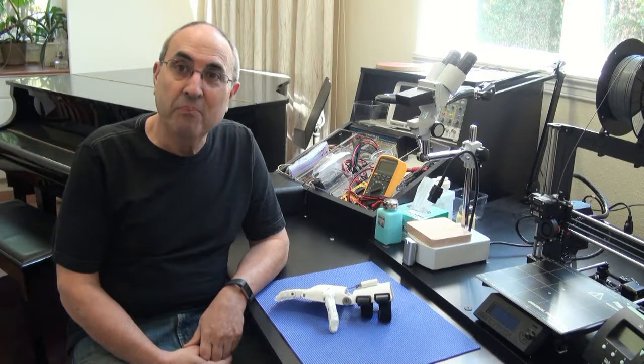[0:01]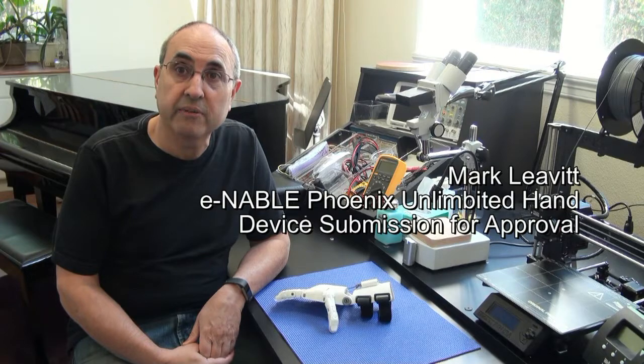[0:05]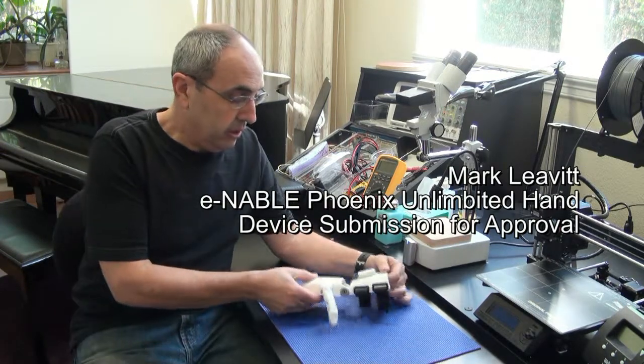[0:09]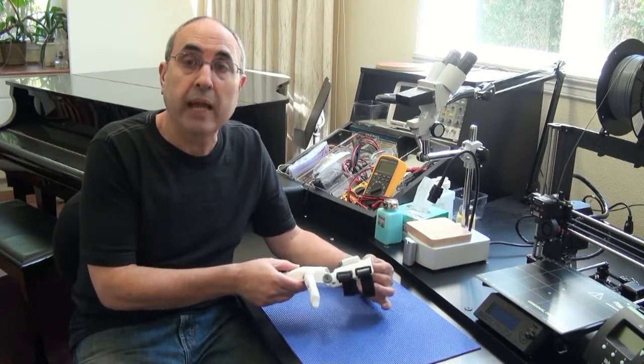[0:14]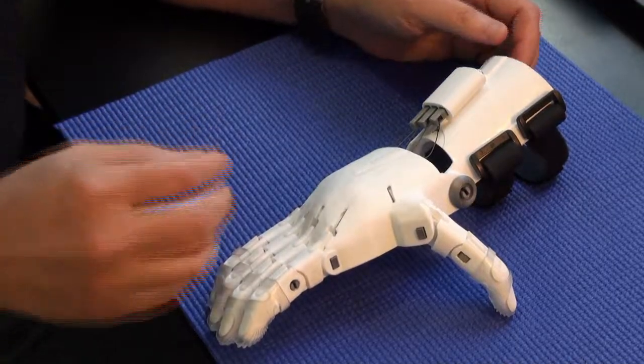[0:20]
Hello, my name is Mark Leavitt. I'm retired from careers in electronic engineering and as a physician. And I'm submitting this video to show my fabrication and assembly of an e-NABLE hand to become qualified to become a fabricator and assembler. All right, let's take a look at the device itself.
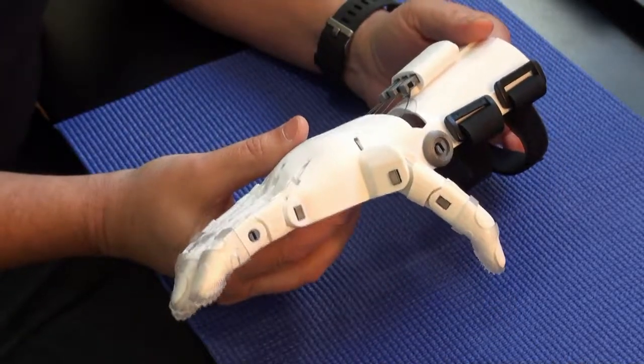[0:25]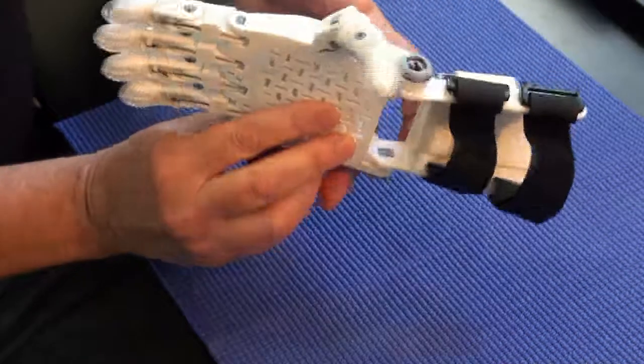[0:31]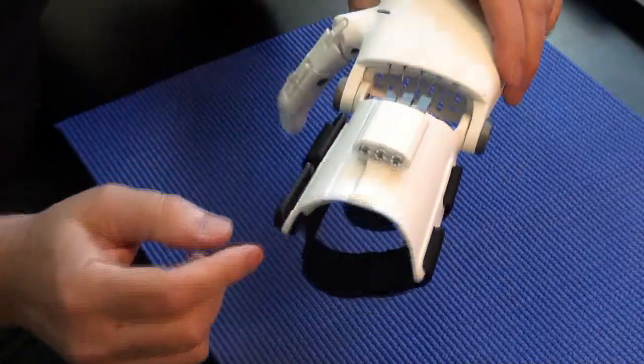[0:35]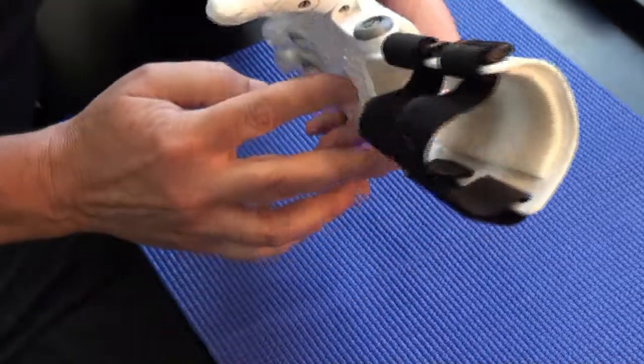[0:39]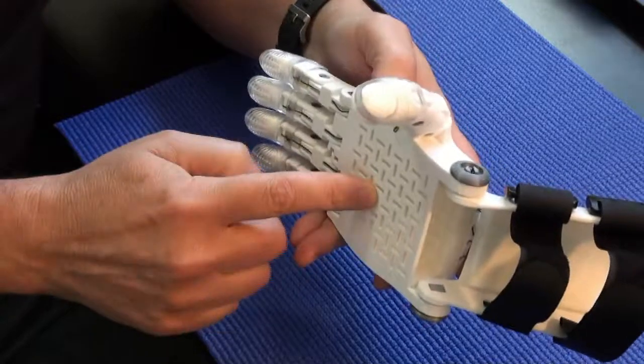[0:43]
So I've made a Phoenix Unlimbited hand, right side at 120% scale. And this uses the three screw tensioner, and it uses the thermoformed gauntlet. And this Phoenix Unlimbited has the integral thermoformable palm, not the separate palm that's screwed on.
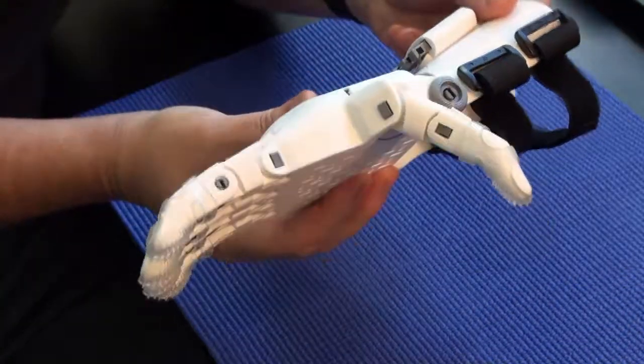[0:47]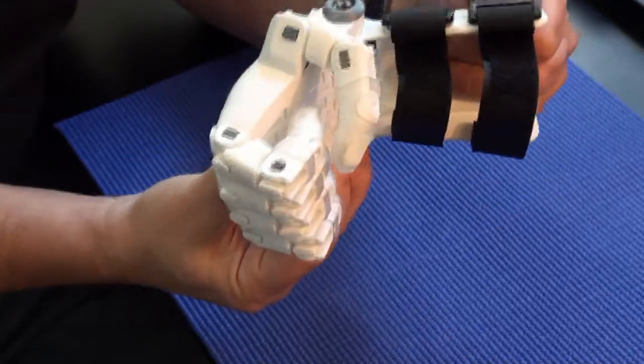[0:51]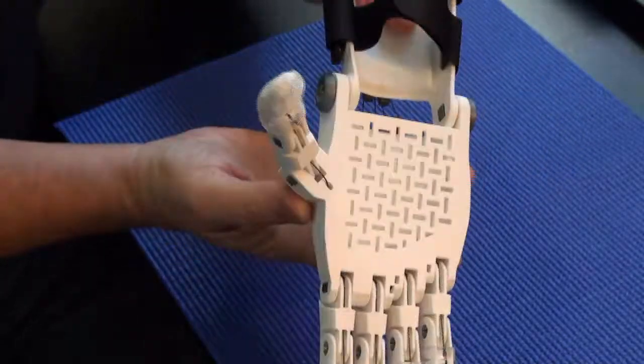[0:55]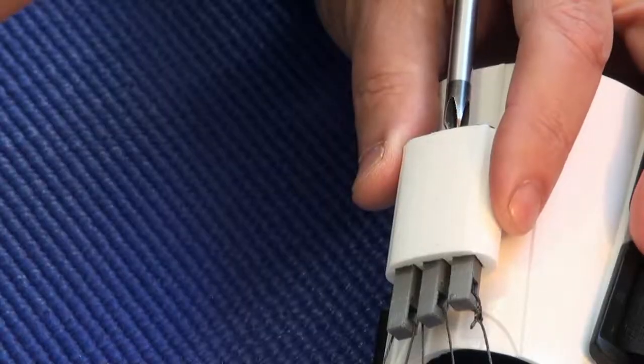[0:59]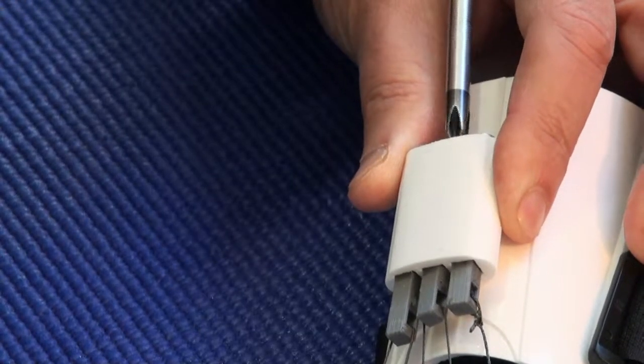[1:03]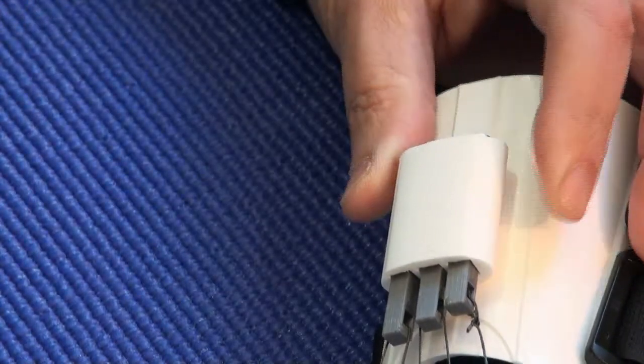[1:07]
So to look at the function of the hand, you can see that when I bring the wrist in, the fingers close and the thumb closes on top of them. Give you a couple of views here. I'll show the tensioner operating here. As you can see, turning this screw tightens this tensioner bar or loosens it as I loosen it. And that adjusts the function on the second and third finger, the tightness.
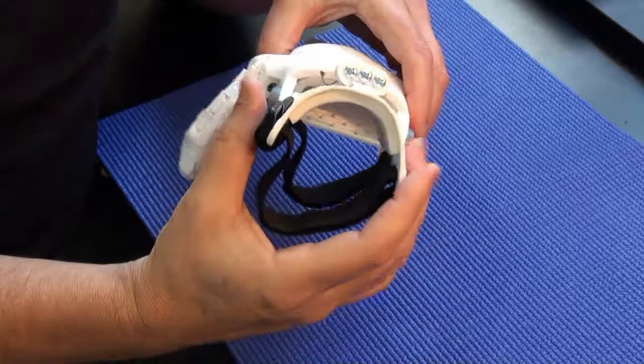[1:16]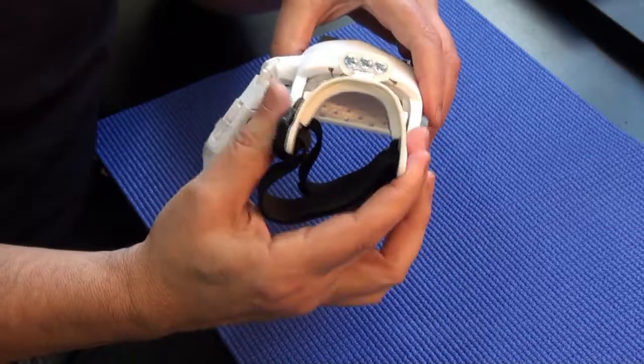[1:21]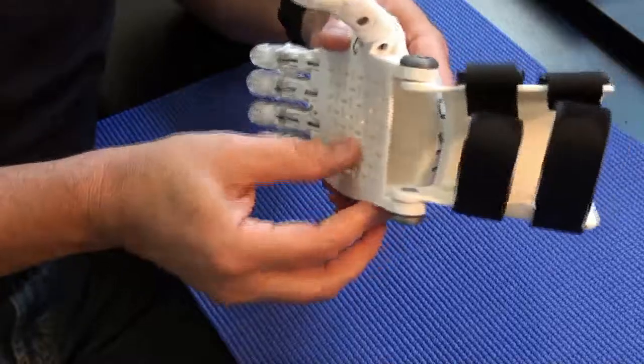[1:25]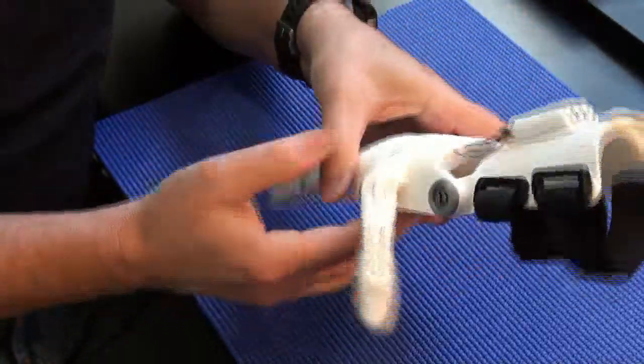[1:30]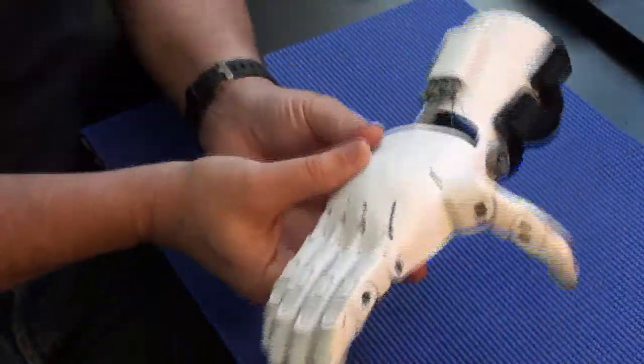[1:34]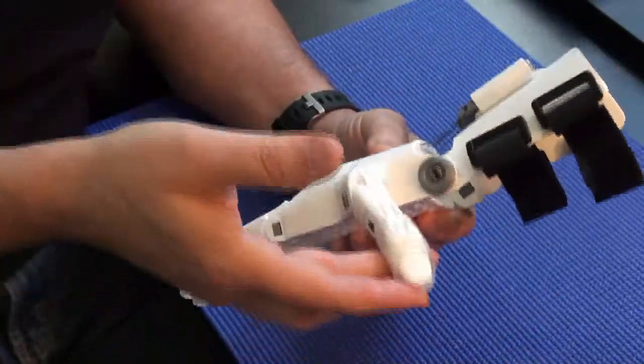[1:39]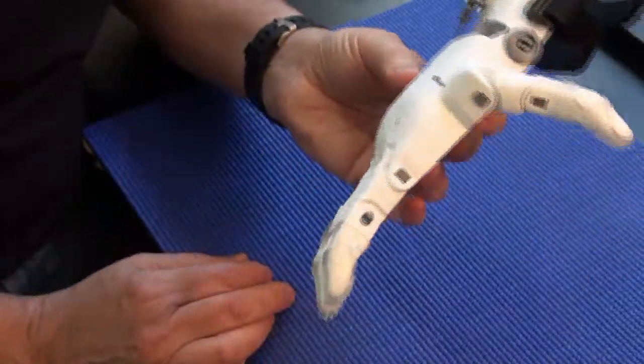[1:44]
Let's look at the durability. You can see that the thermoform gauntlet is very strong as a result of being bent after printing rather than having all those Z layers. The palm is very strong because it has the integral palm, so there's no flexing there. And I can shake this violently. No pins come out. I can put quite a bit of stress upward on the fingers. I can overstress them downward. Everything holds together. So I'm really pleased by the durability.
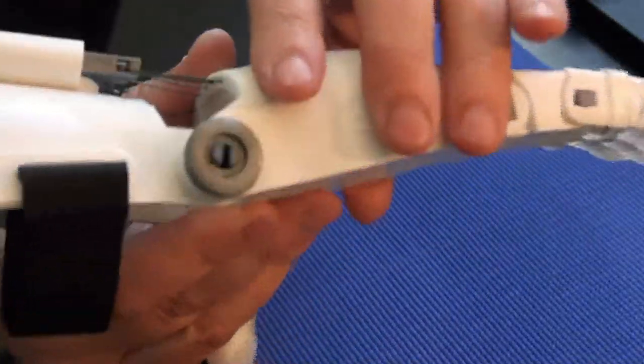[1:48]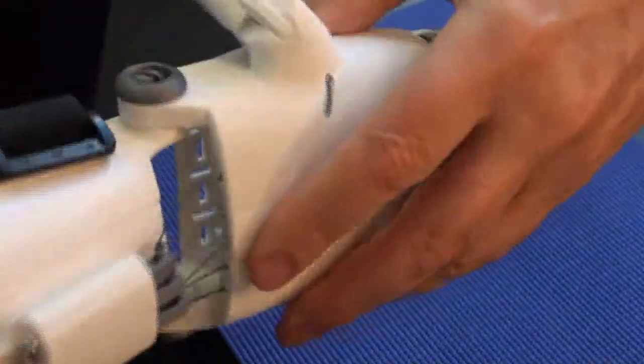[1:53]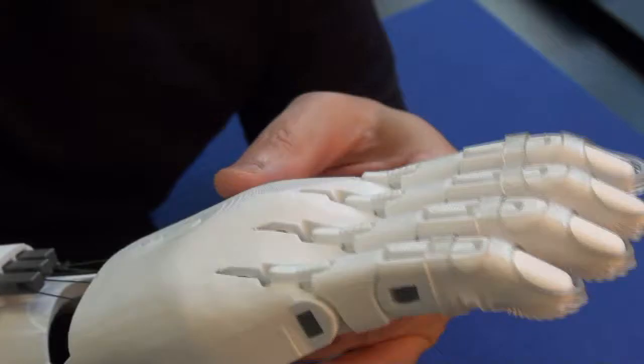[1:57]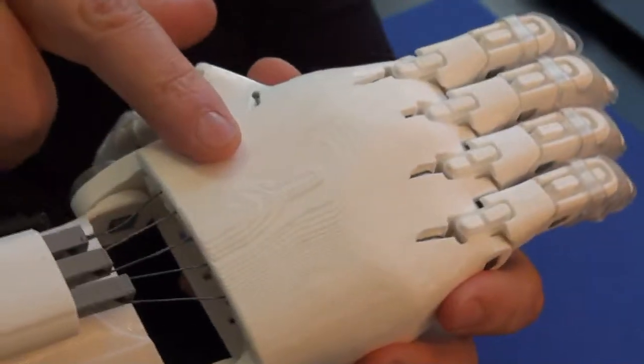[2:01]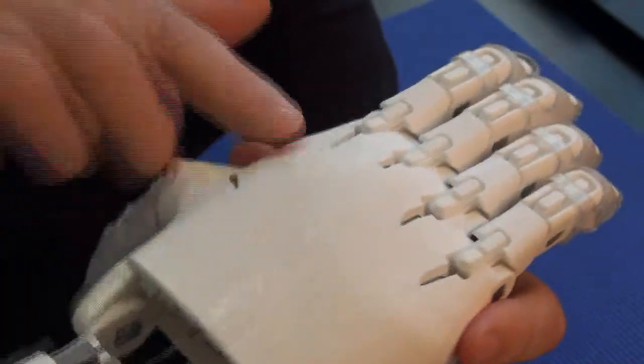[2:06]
You can see the pins in place here. There's no tendency of these to shake out both sides. Let's take a look at the print quality here. The only place you really see stepping is at the top of the palm. You can see that the 200 micron layers give some stepping, but it's not rough to the touch.
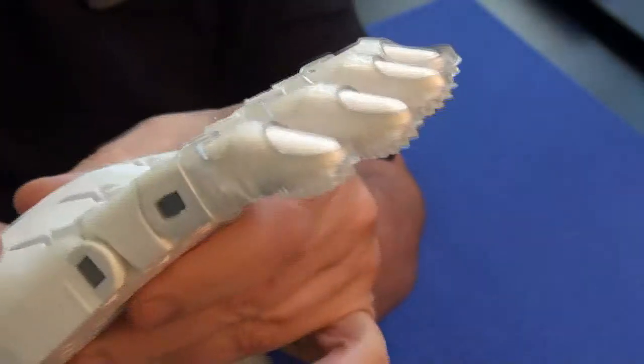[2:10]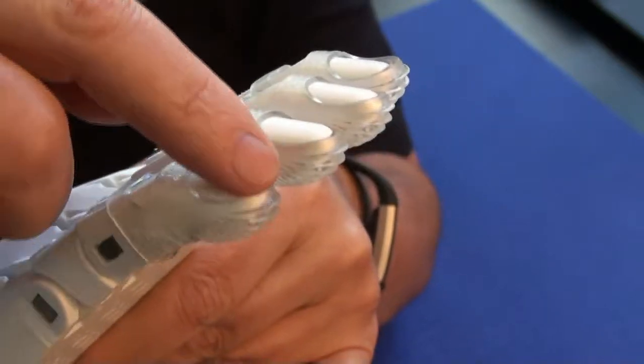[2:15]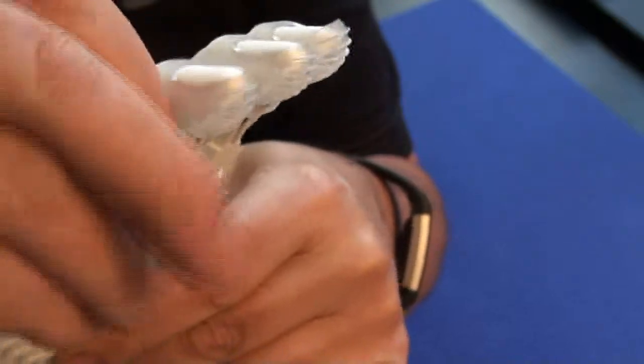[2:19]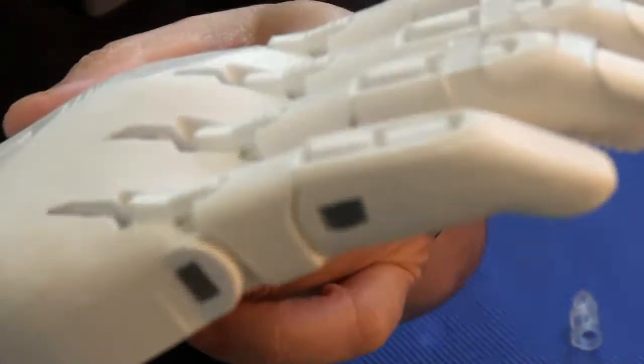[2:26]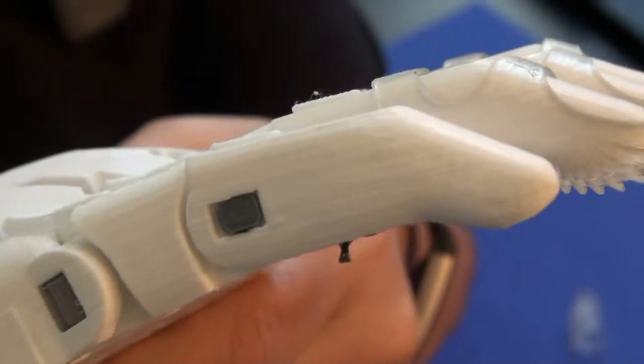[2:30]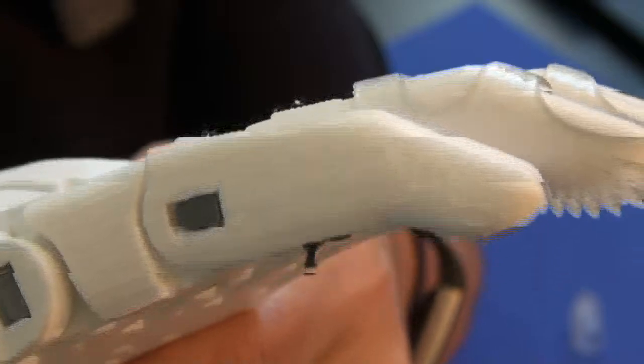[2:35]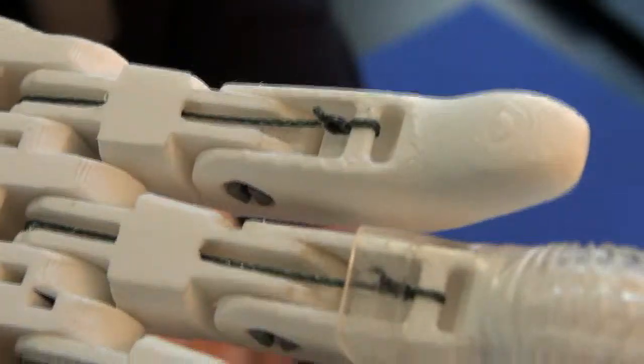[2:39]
The fingertips came out quite good after I learned how to slow down the printing so you didn't get drooping or curling. And I think what I'll do here is pull off the silicone tip on the pinky finger and give you a close-up of that as best I can. There you go. So you can see I got good results after a couple of tries and a learning experience. And then the bottom side of the finger, again, you're going to see some stepping there, but beyond that, not really a lot of roughness.
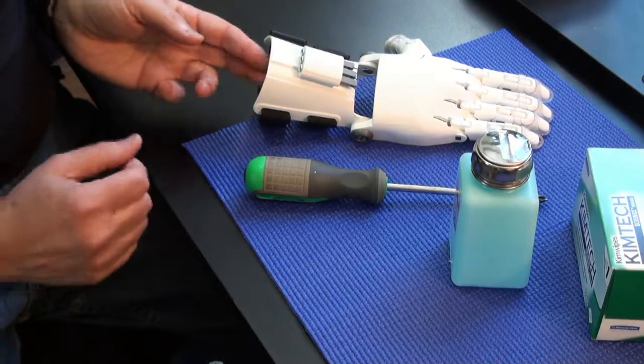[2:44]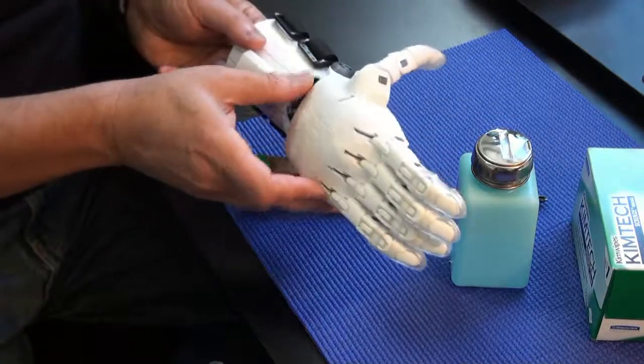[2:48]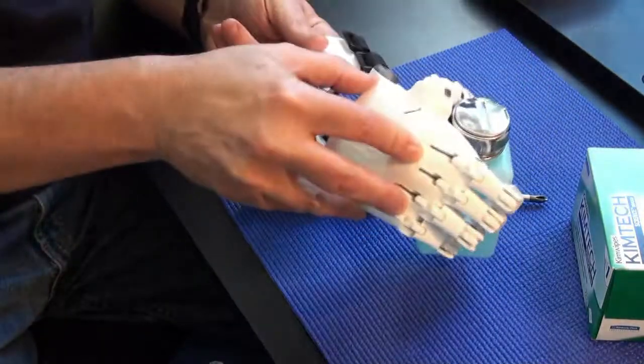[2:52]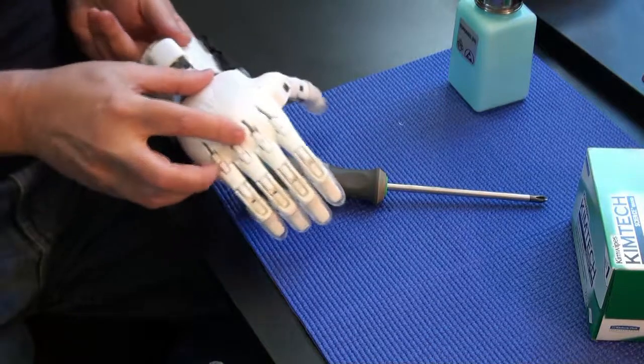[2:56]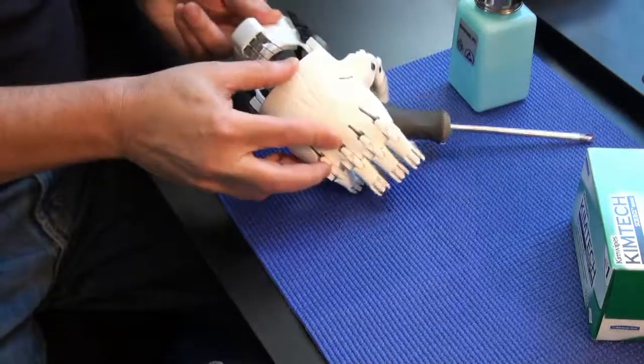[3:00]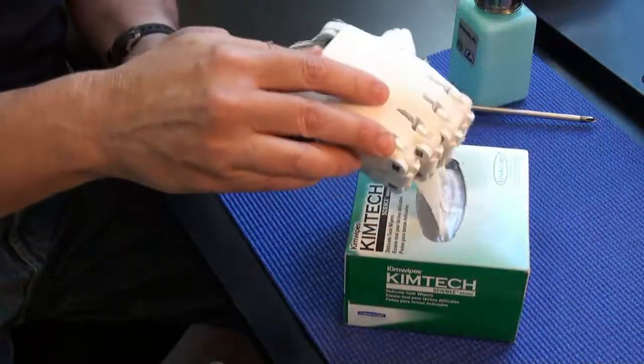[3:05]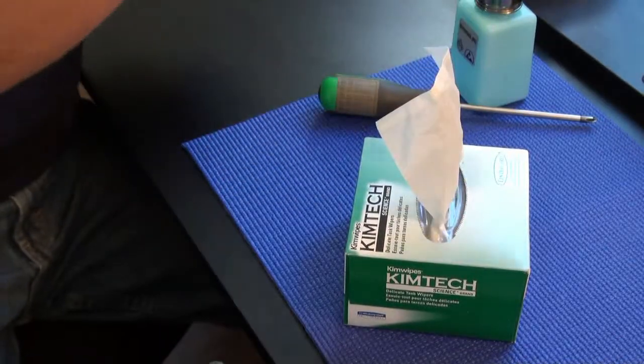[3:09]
I think more important than how the hand looks is how it functions. So let's try some demonstrations. Let's pick up this bottle of isopropanol. I can do that without spilling it. Let's see if we can pick up a screwdriver. I'm not sure how well we could screw something with it, but we can pick it up and manipulate it. Talking about getting something delicate, let's get a Kleenex. Actually, a Kimwipe. There you go.
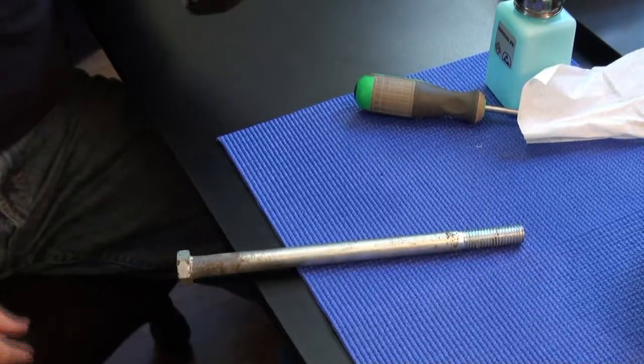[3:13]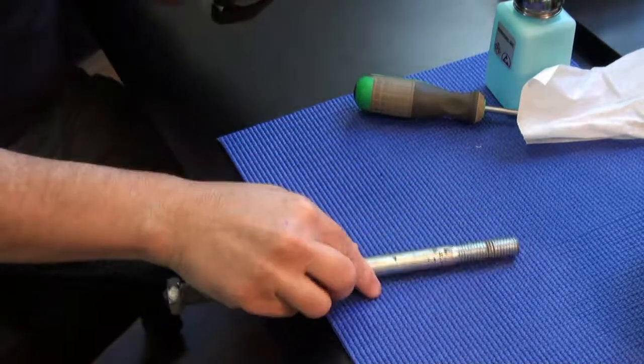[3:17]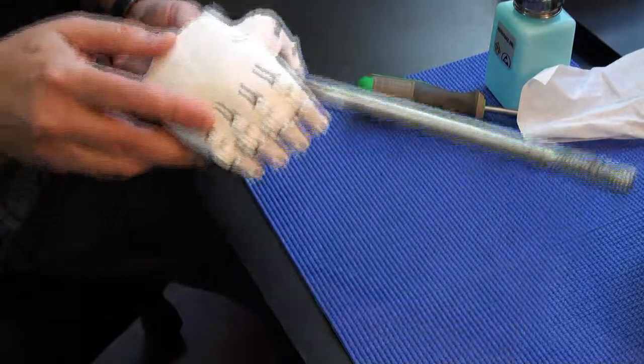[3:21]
And for kind of a brute force test, I've got this bolt. It's heavy. And we're going to grab it off the table here and see if we can pick that up. There it is. Pick up this heavy bolt.
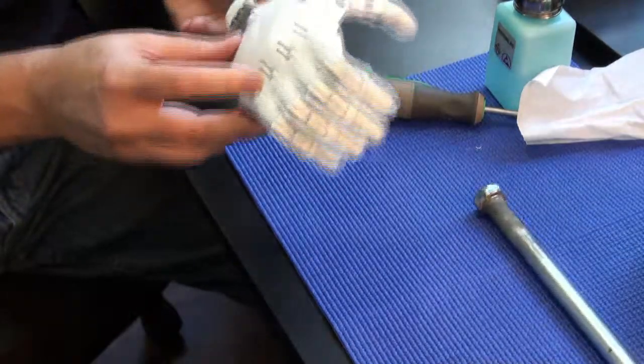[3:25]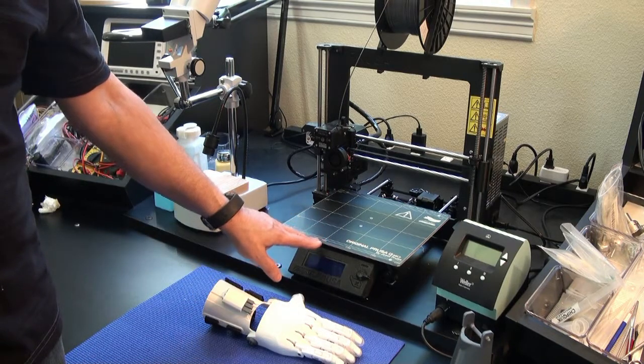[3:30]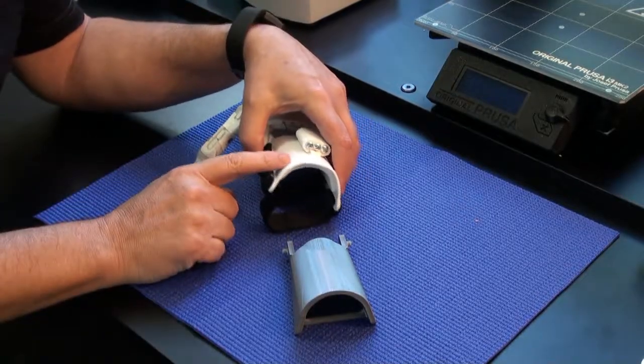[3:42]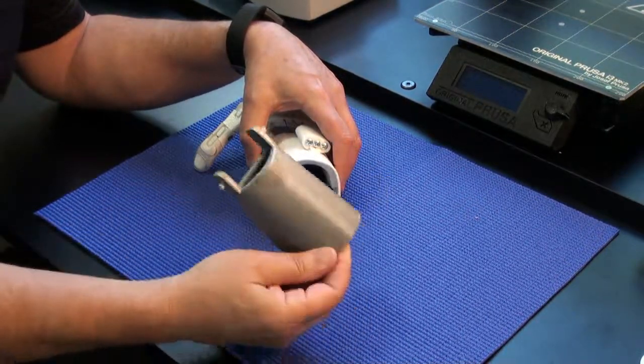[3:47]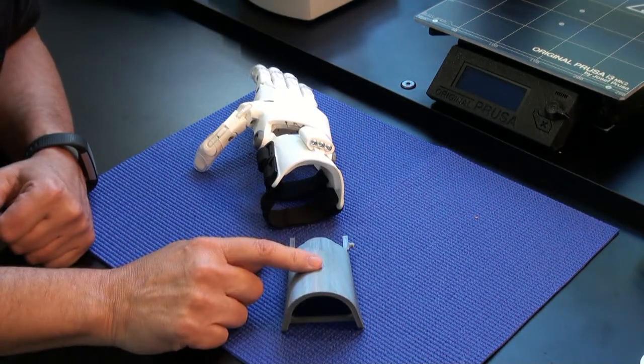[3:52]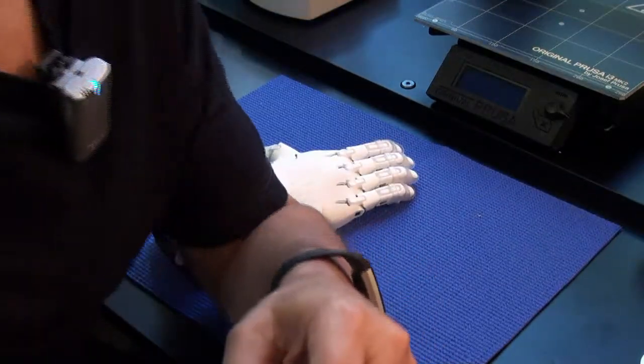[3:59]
So this hand was printed on an original Prusa i3 Mark II, which I built from a kit. Just got it assembled about a month ago. I was pretty pleased by how well the hand was designed to enable printing on this pretty low-end printer. The gauntlet was thermoformed using the 3D printed jig that was provided as part of the files. So I think that's a technique that will find greater use in these prosthetics, a combination of 3D printing and post-printing thermoforming.
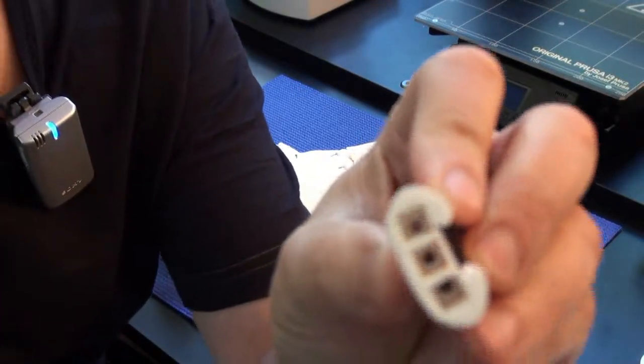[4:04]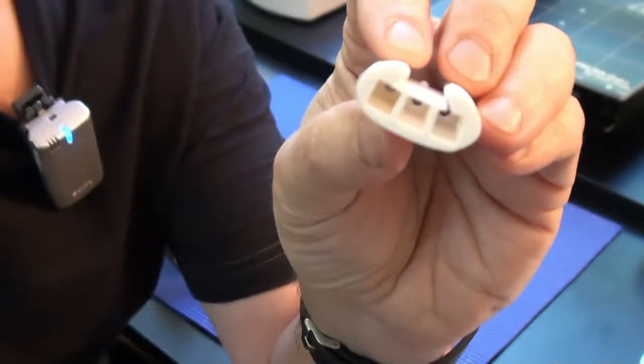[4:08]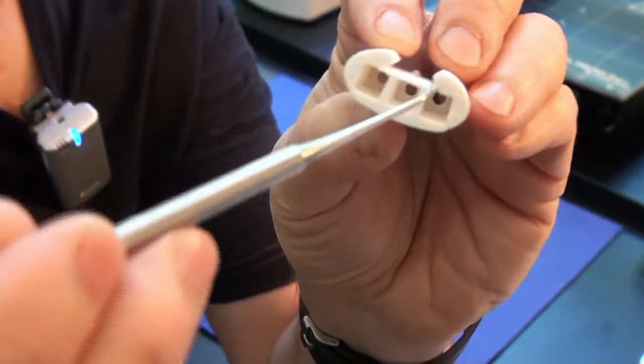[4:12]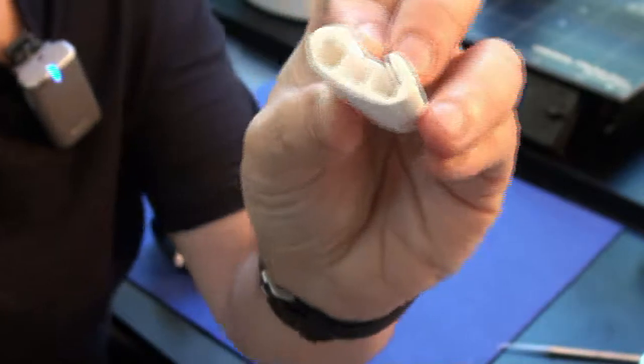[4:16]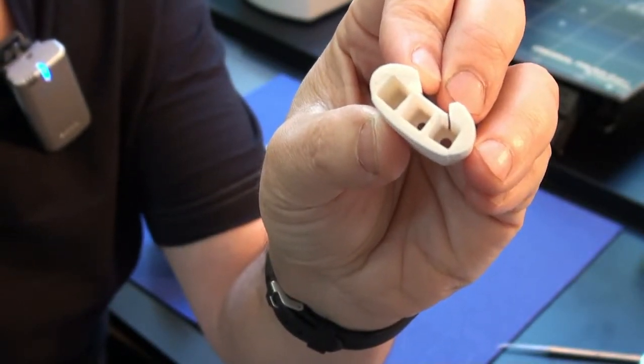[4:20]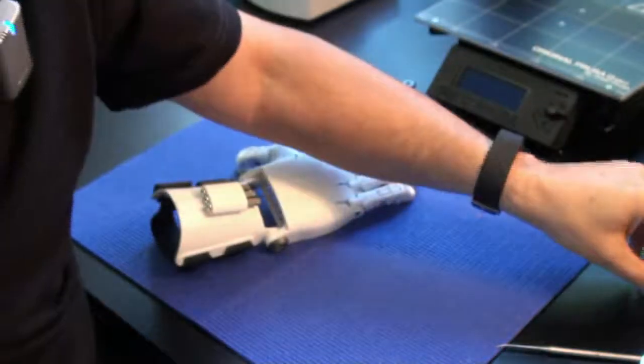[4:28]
There were a few issues when printing. So one of them was that the slicer that comes with the Prusa printer actually omitted some plastic. I think you can probably see here, there's actually a gap right here. And that's because the slicer thought that the wall was too thin and just omitted that connection. So that was just a matter of adjusting the slicer settings to not allow it to thin the wall that much.
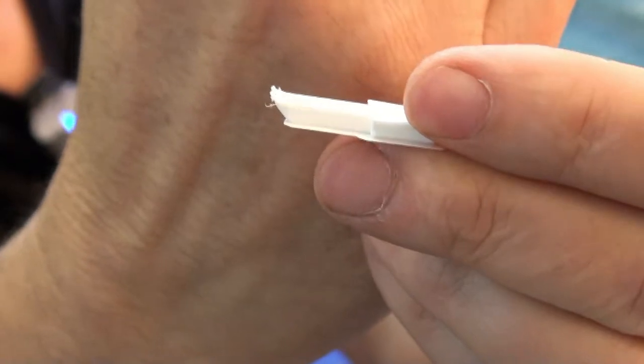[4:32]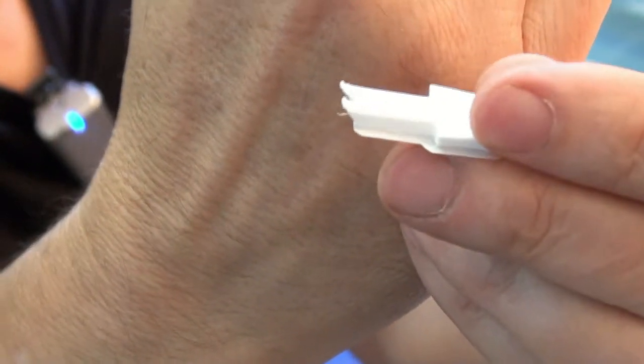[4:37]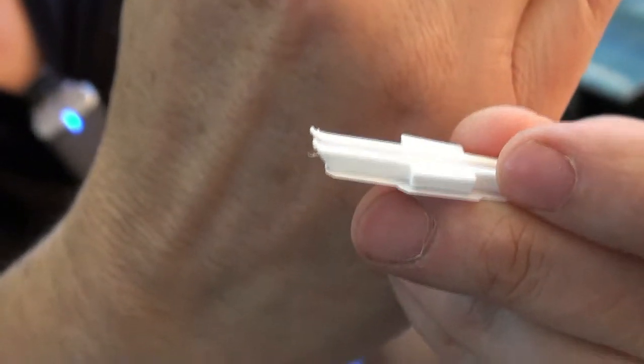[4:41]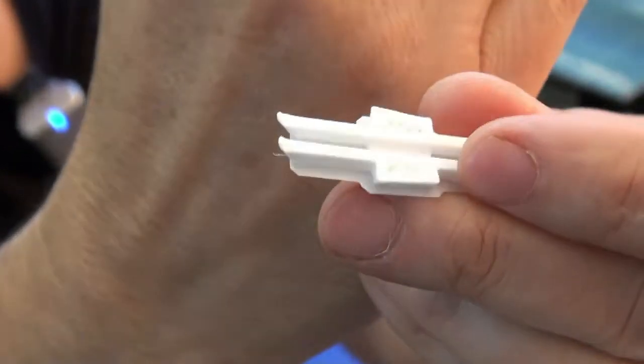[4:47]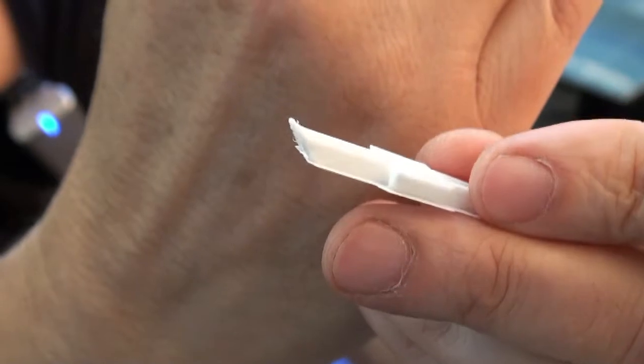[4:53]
The other issue is when you're printing these overhangs. So you can see this part, the tips of it have curled up. This was only partially printed. It's the proximal phalanx. And once those tips curl up, the nozzle or the proximity detector eventually hits it and either knocks the print loose or causes other catastrophic failures. So I had to try a couple times before I found out how to fix that.
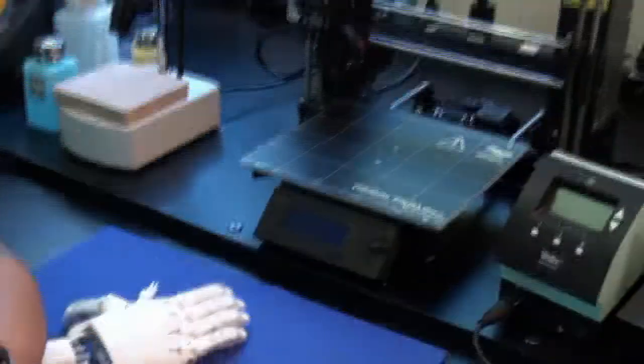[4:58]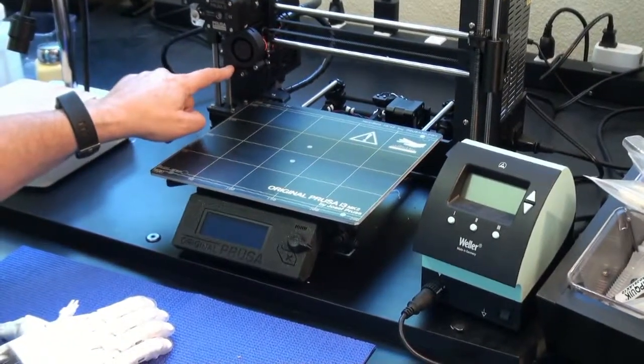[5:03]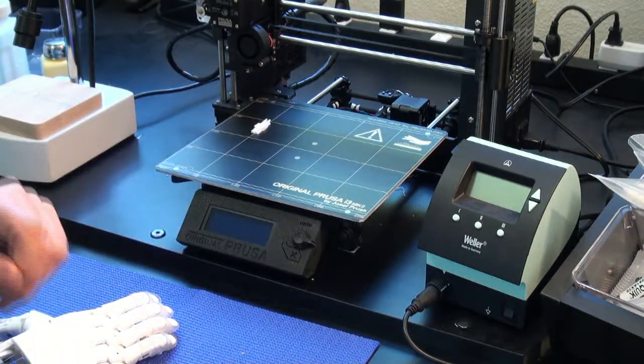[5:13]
So it turns out on the Prusa printer, the cooling fan is in front of the printhead and has trouble cooling the area behind the printhead. So if you orient this on the bed with those narrow tips toward the back, you're more likely to get curling. So I found if you reorient the print with the narrow tips in the X direction this way, you have less trouble. And also you slow the print speed, that allows more time for cooling. So that solved the problem that I had with overhang.
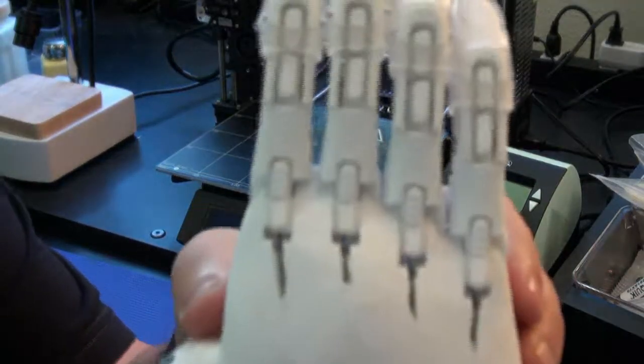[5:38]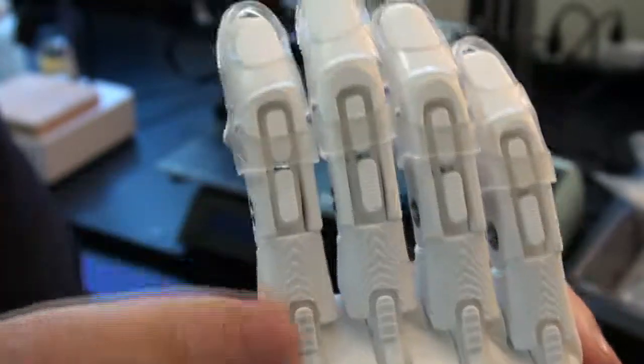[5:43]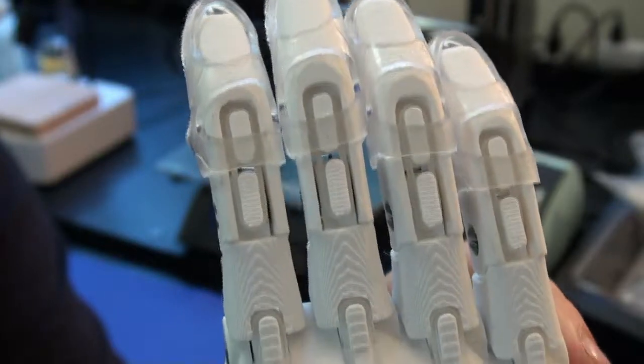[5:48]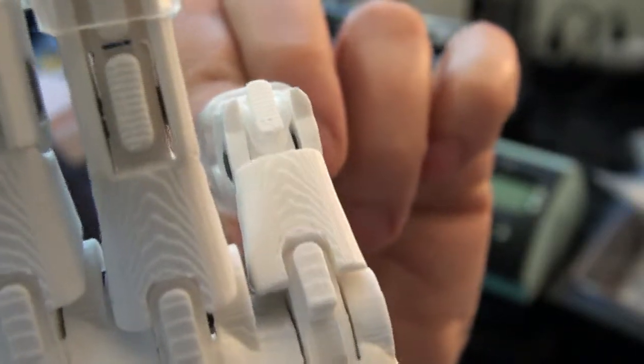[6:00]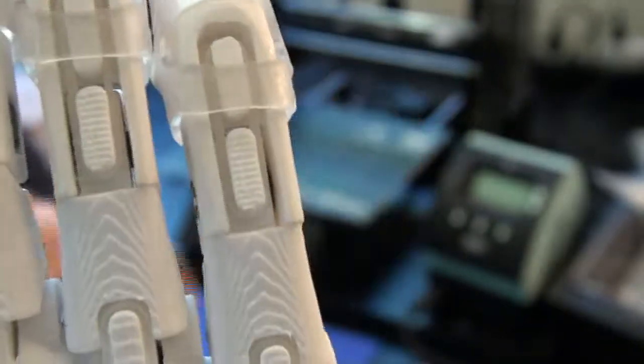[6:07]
The third issue is a design issue. And that is that there's really too much gap between the hinged parts when you scale the design. When you scale it up bigger, you end up with bigger clearances, bigger than you need. And so the result, and I've seen this occasionally when I use the hand, is the dental band can lodge into that excess crack that's formed by the hinge. It's not happening now, but I've seen it happen. And it's easy to fix, but you really don't want the user to experience that.
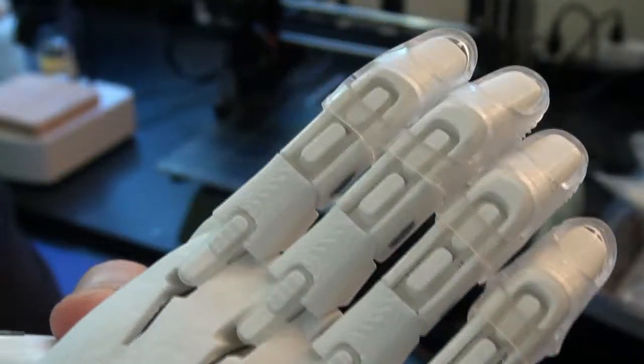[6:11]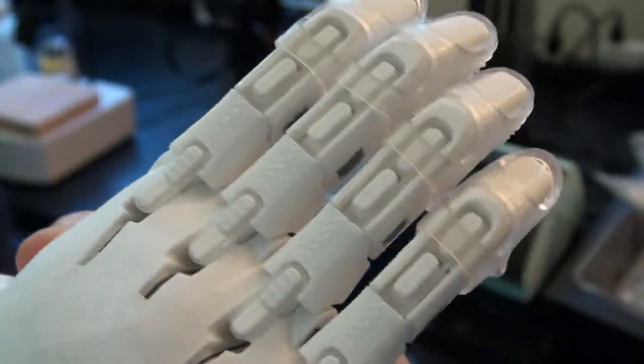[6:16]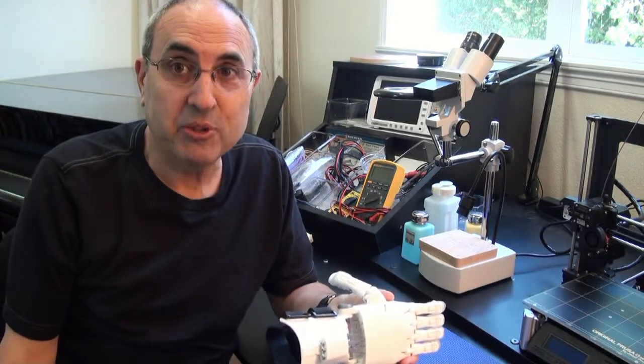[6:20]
And to solve that, we really need a design that can be scaled in size, but that maintains the same clearances between the parts of the hinge. So that wraps up my video description.